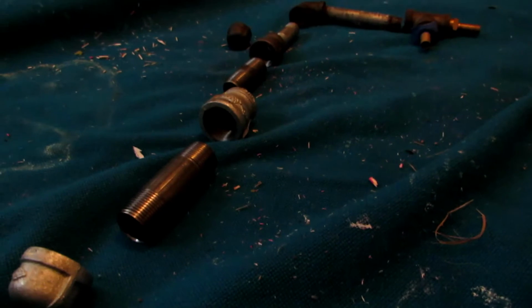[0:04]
So, today we are going to be making a simple distillation apparatus out of these steel parts. Now, I do have a glass distillation apparatus, which I bought online, and it works very well for several applications. However, if you're using really high temperature applications, then you may melt out your glass and it just won't work.
This is demonstrated in Nio Red's video, where he melts his glassware when he tries to make acetone from calcium acetate, because he just gets it too hot and it ends up melting. So, when I go ahead and make acetone from calcium acetate, I will be using this steel distillation apparatus, which I am building, because it will be able to handle the very high temperatures and will definitely not melt.
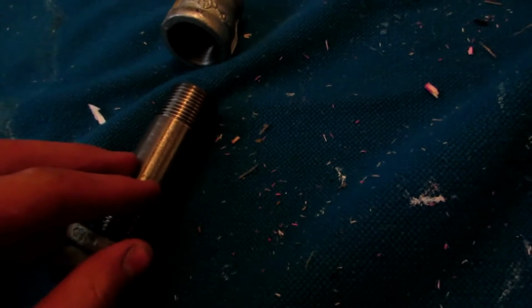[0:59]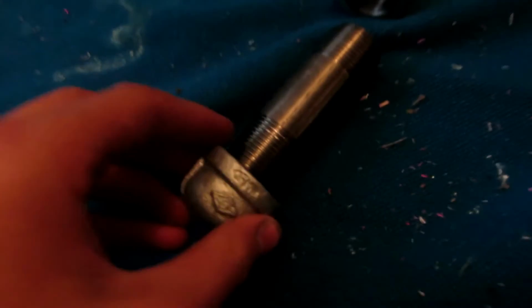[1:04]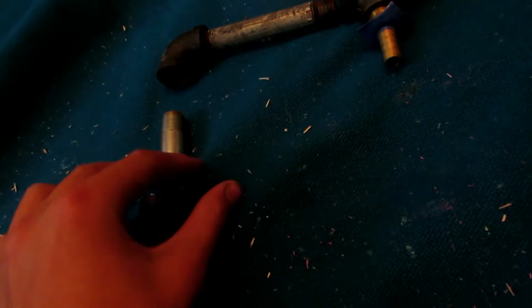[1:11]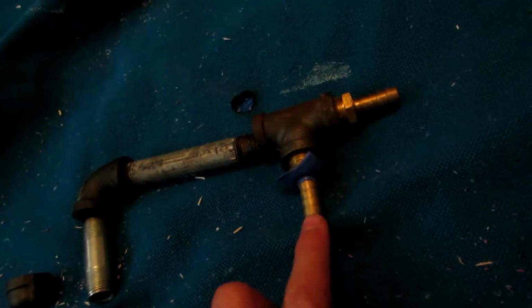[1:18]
Anyhow, so this is rather simple to do, and it costs about $15, including all the steel parts, from Home Depot. Now, you don't really need all of this, but I just went ahead and made it much bigger. So basically, this is a bunch of half-inch pipe here, and this reduces it to three-quarter-inch pipe, and this reduces it from three-quarters to half-inch, and then this piece reduces it from half-inch to 3/8 of an inch. And then this goes over, and this is our condenser column, which a test tube could be applied onto here. And these are just two pieces, and then there's your output.
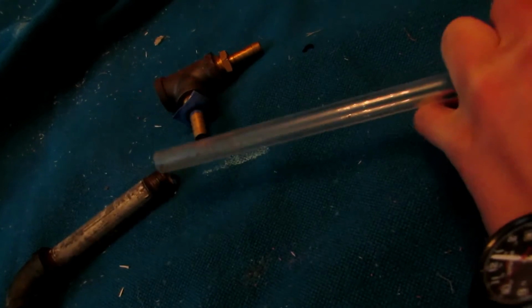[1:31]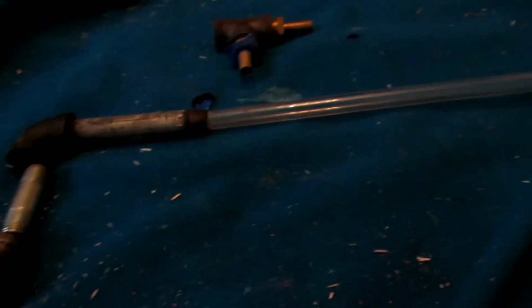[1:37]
Test tube could go there, collect your distillate, or you could opt out to instead take a long piece of tubing or something. This is quite hard tubing, it doesn't bend or anything. And you could hook it into here and create a very long distillation column, which would condense your stuff. Much easier because it's much longer, and this is probably what I'll end up using for higher temperature applications.
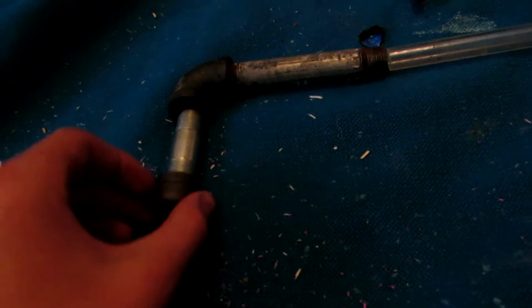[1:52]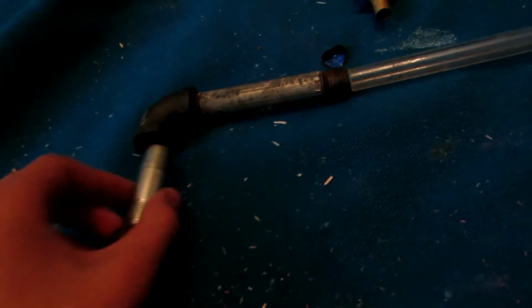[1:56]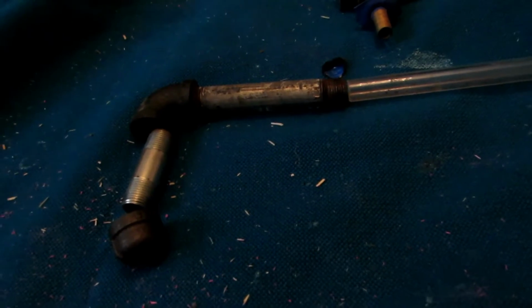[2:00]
Anyhow, also, in the case of something like cesium or something, you don't need that big of a thing, so I also purchased a 3/8 inch end cap, so we can have a smaller little capsule here for distillation, because I'm planning on making some cesium through a displacement reaction and then distillation of cesium.
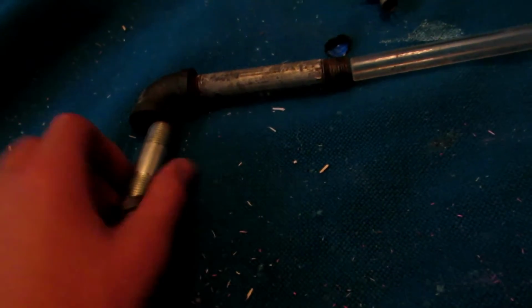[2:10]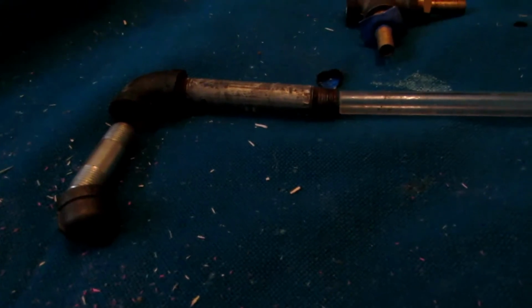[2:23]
You could also probably do this with potassium, and I have attempted this, however, I melted out my thing with my arc furnace, so I will be creating a rig which will keep a very high temperature lower than the melting point of steel, which will still work for isolating potassium this way. Anyhow, besides all that, I'm going to go ahead and put this together to show you exactly how it looks.
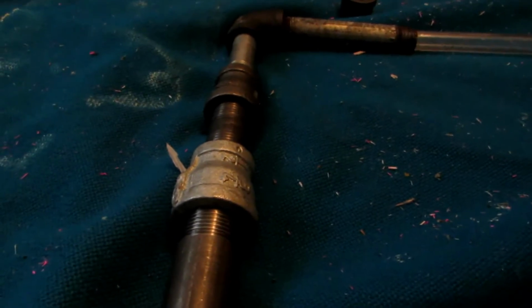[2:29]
Okay, so it's all been put together, and you can see this is where your product will go before it, you will put your impure product here before you distill it at high temperatures. And then we'll travel down our condenser column over to this side, where we can stick a test tube up into this piece of plastic, which will act as a receiving flask.
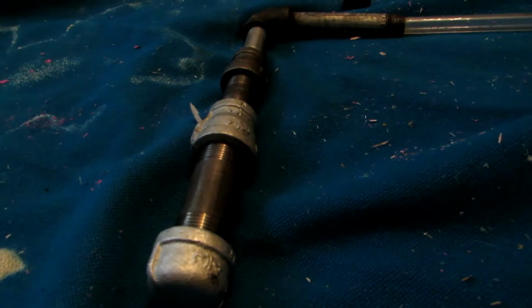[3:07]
You could also just stick this in the top of a Erlenmeyer flask or something, or any container, and collect your liquid there. Only one more modification will be needed, which is to drill a hole in the top to prevent pressure buildup in the case of you having a test tube here, because that would be a sealed device, and you'd get pressure buildup and break it at some point. Anyhow, so the next part we're going to work on is the heating supply.
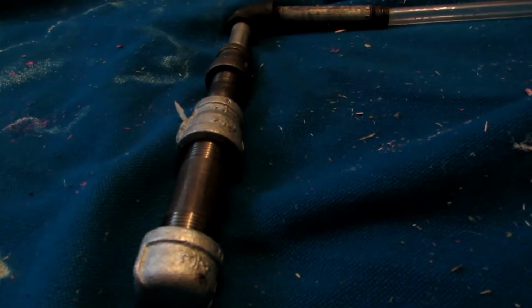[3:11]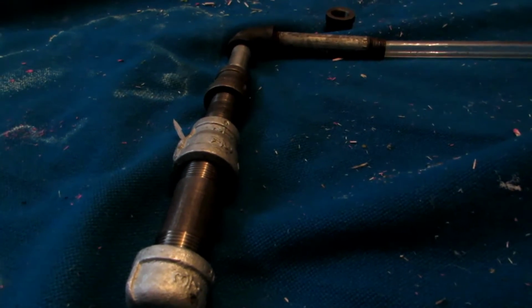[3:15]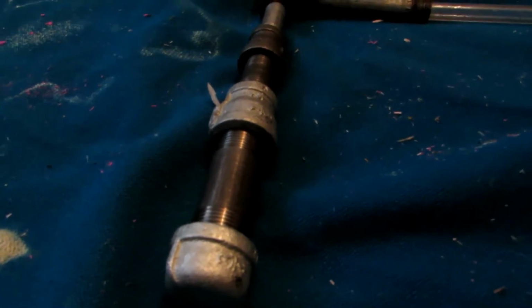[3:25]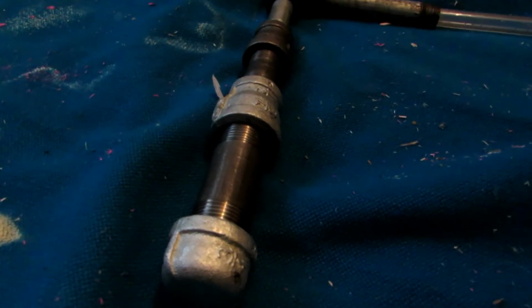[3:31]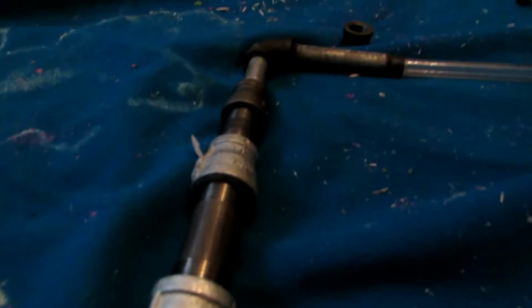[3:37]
Now this is essentially going to be a refractory brick, which we'll drill out the center and drill a hole in the side. And this will allow us to put a propane torch in there and have it heat all around our steel apparatus here. This will become very hot, probably just over 1,000 degrees Celsius. And that high temperature will keep this steel below its melting point, but at a high enough temperature to distill over and break down most compounds, including distilling over cesium and potassium.
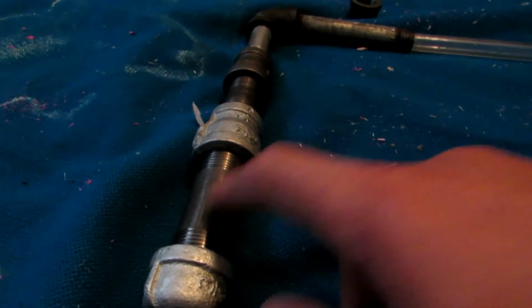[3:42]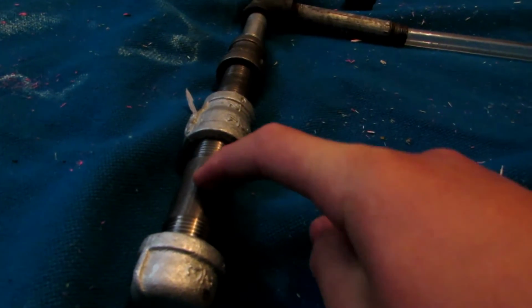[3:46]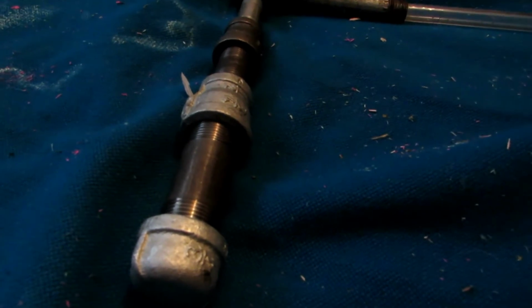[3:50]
This will allow it so that we don't have to just concentrate the flame in one area. Because then, all the rest of this apparatus is a place where your potassium or cesium could condense, and you will not get it going all the way up and over. So we must be able to heat the entire column evenly. So go ahead and prepare the next part.
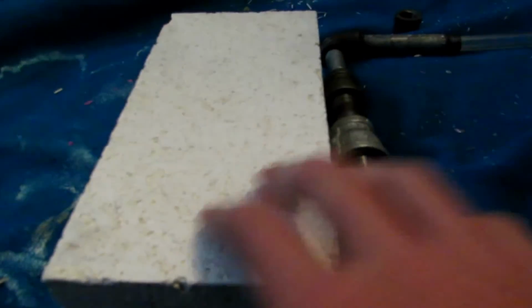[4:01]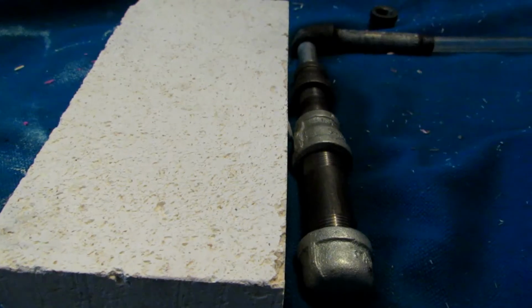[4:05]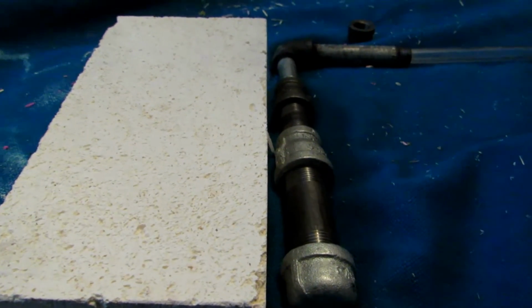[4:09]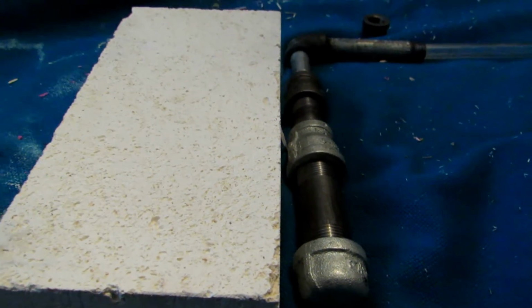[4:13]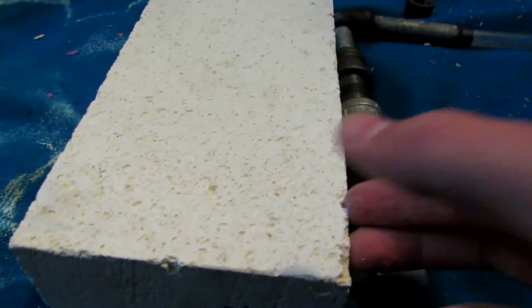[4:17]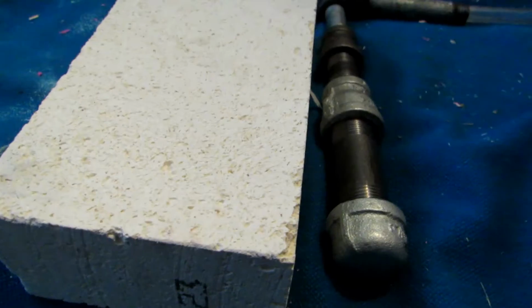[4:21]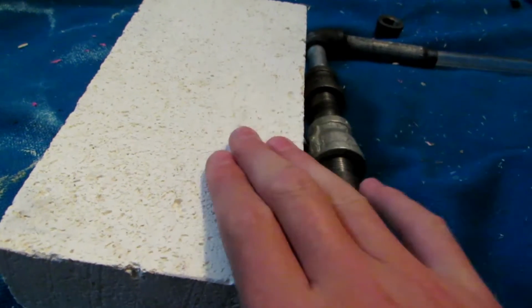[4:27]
Okay, so this big refractory brick I obtained from a place called Green Barn Pottery Supply. It's in Surrey, Vancouver, if you live anywhere near there, and that's in Canada, British Columbia. Now, this will be extremely useful because it is very porous, so it does not conduct heat very well, and it has a fairly high melting point of 2,300 degrees Celsius, so a blowtorch will not be able to melt this. So we will be able to create a very hot chamber in here.
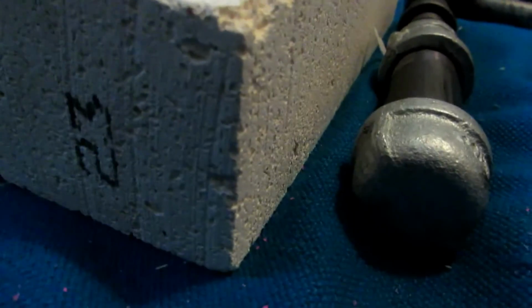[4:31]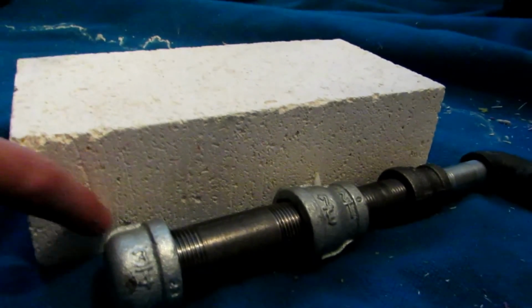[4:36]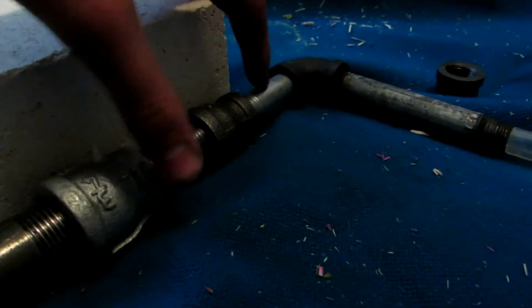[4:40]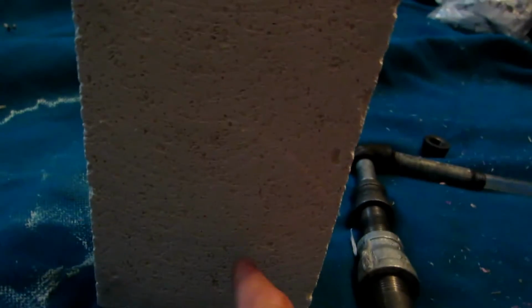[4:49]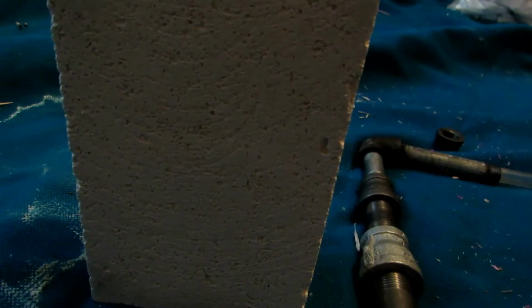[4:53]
Now this is only 2 inches tall, as you can see, but it is clearly long enough that if we leave a bit of insulation room at the bottom, we should be able to nearly cover our entire pipe here, and the heat coming out of the top will warm up the rest of this. So to do this, it's going to be fairly simple. We're going to drill a hole for our blowtorch, and depending on your size of blowtorch, of course, you're going to have a different hole. And we should do it at an angle so that the gas is spiraling around, evenly heating everything. And then it will come out the top.
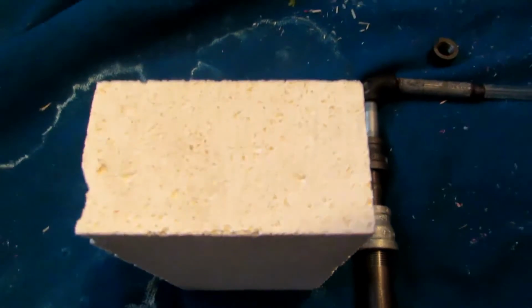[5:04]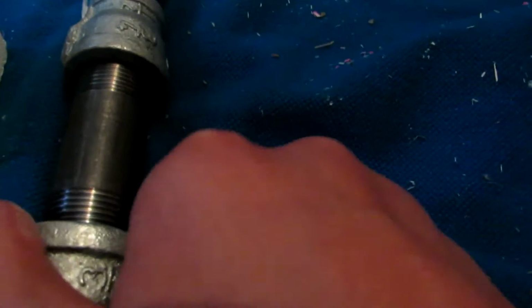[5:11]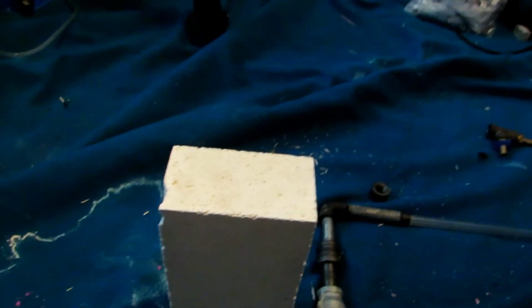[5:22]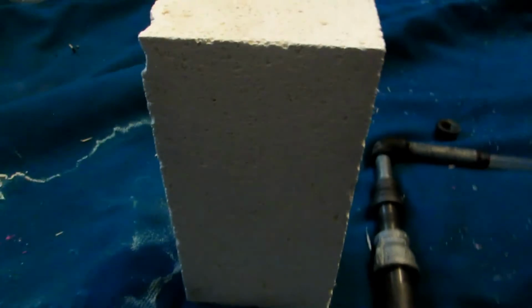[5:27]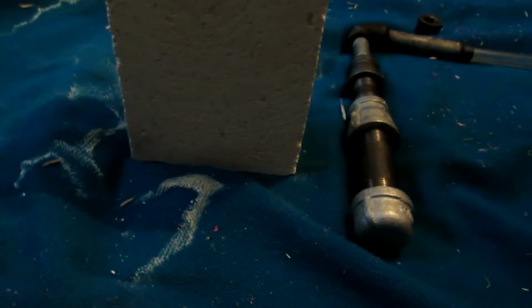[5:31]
And through the top, we'll have to drill a very long hole, which is at least big enough to accept the largest part of our distillation apparatus here, so that it will be able to slip all the way down inside, and there will still be room for the gas to circulate around and come out. So I'm going to go ahead and see if I can find some drill bits which will do such a job, and I'll drill straight down until about this point and insert a hole, and I'll meet you back when that's been done.
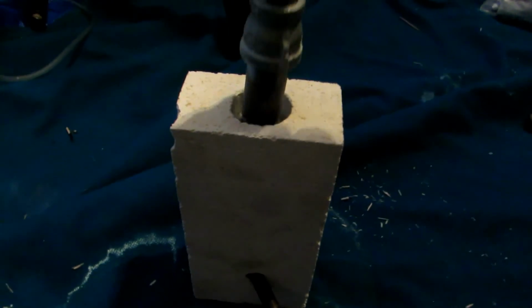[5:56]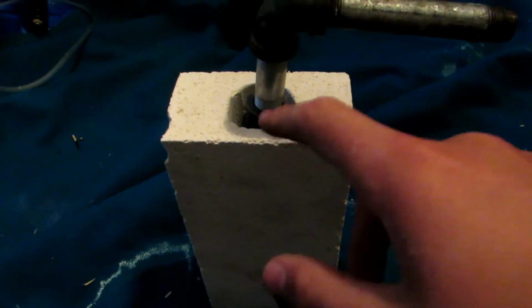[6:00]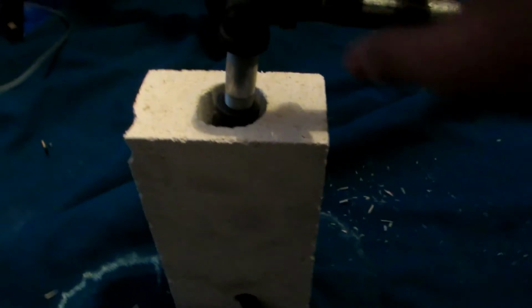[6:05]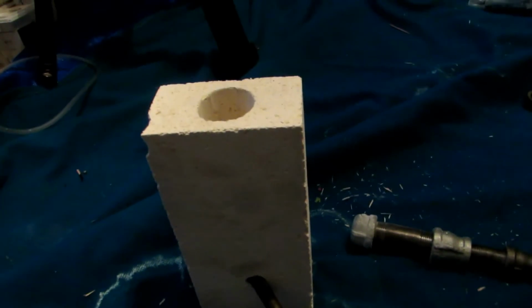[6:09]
Okay, so I went ahead and modified the brick, and it turned out that I needed a 1.5-inch hole in the top, which went right down until about here, where I drilled a small hole, which can be variable depending on the size of your blowtorch. And then this could just be inserted in so that it's just right at the very edge. Now, your distillation part of it, like the flask to begin with down here, should go in a fair distance, and it sits right at the bottom. It slides in and out nicely, allowing a fair amount of room for air to travel by.
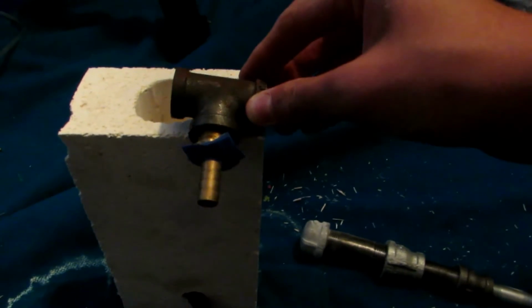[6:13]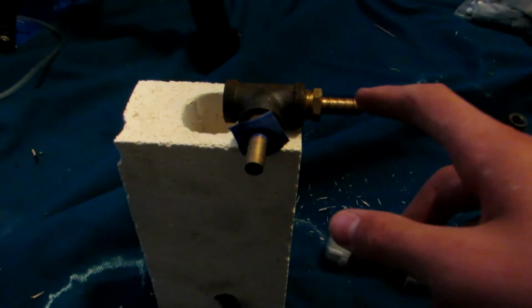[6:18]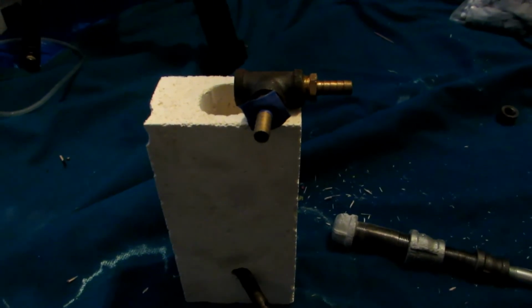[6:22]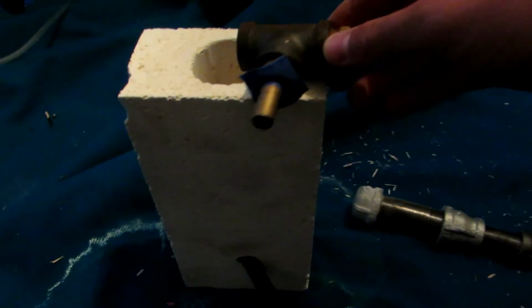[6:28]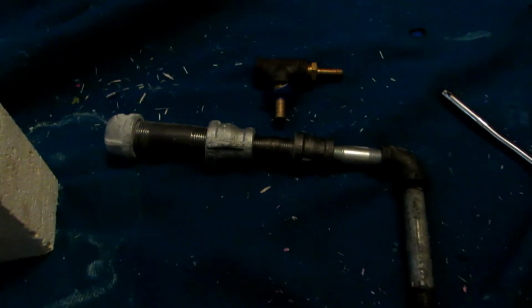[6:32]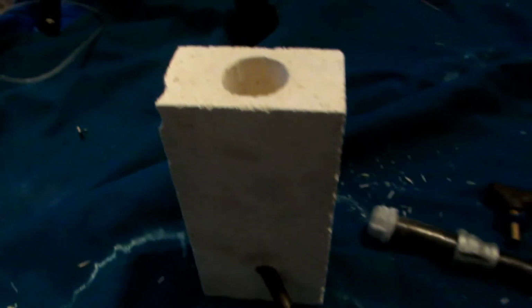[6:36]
Now, with this adapter here, another thing that I forgot to mention earlier is that when hooked on, you can put a test tube here and put this to a vacuum pump. And this allows for the collection of cesium, because cesium must be distilled under a vacuum and cannot be distilled in the air, of course. And then this rubber here just creates an airtight seal and holds your small test tube on. Now, that could also vary depending on the size of the test tube that you use. Anyhow, so let's go ahead and give it a quick run.
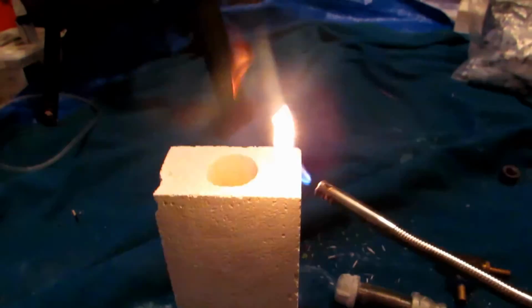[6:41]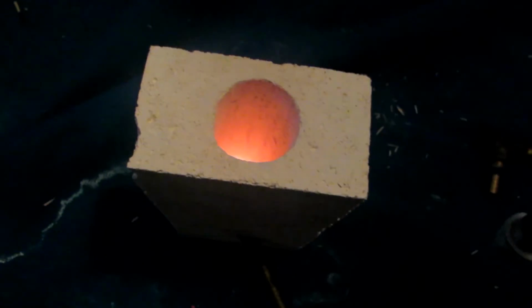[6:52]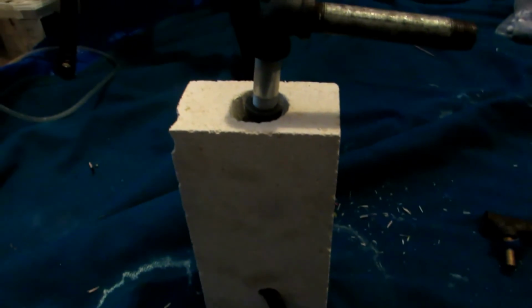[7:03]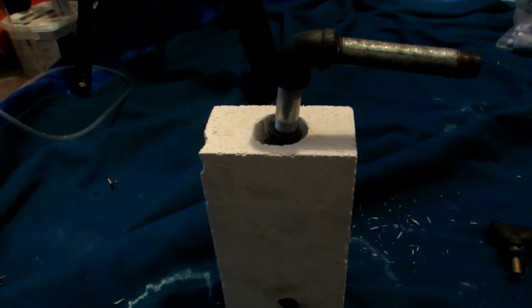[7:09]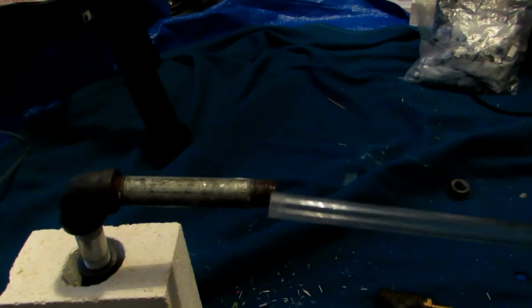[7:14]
So, we start by, of course, turning on our gas, take a light or something, and simply do that. Now, if we look down inside, you can see it's getting quite hot in there, and it looks really nice down in there. It shouldn't be too difficult, but you just simply put that in there, and it will start to heat up. Now, of course, I'm not doing a distillation right now, so we'll just turn that off. But yeah, that's basically the principle behind this working. And this will heat up the entire column, getting everything nice and hot, although it will take a while to heat up because metal is such a good conductor. We can then attach on whatever other piece that we need and go ahead and distill whatever we want.
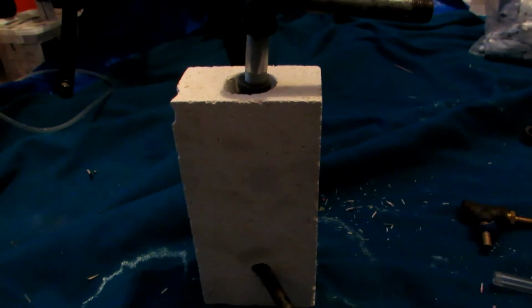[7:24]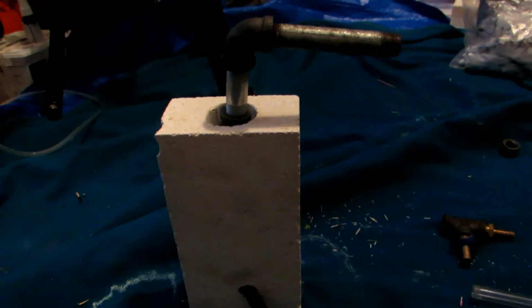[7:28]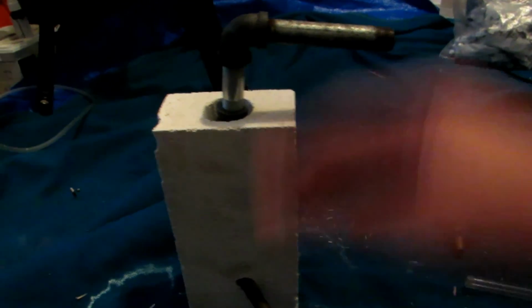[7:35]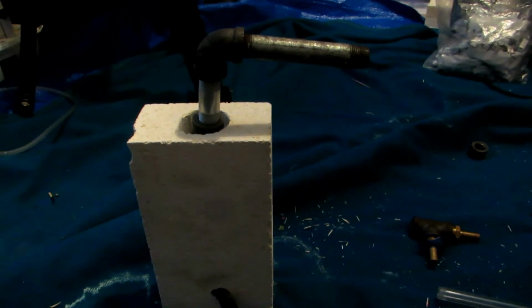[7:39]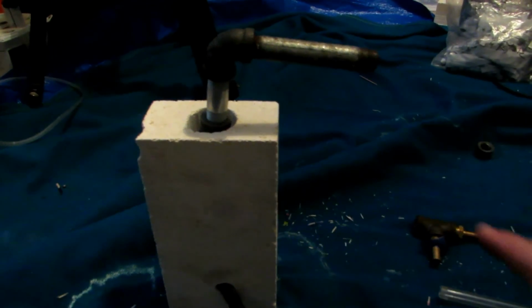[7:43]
Now remember, if you do this, such as in the process of acetone, there's no way to monitor what temperature things are coming over because a glass thermometer in this heat would just melt. So you distill everything over and then do a simple distillation with a glass apparatus where you can use a thermometer after you've collected your crude product. This is just for basic, very crude distillations.